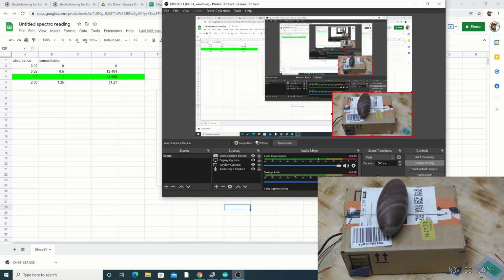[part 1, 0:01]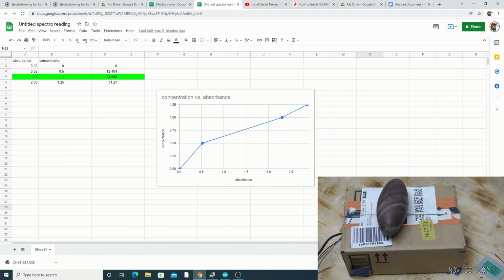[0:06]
All right, today we're going to be looking at a spectrometer. It's a very interesting device that I have put together and is going to help out many individuals that are suffering from not knowing what concentrations of copper sulfate they have in their bath.
So spectrometry is a way of being able to pass light through a known solution, and the known solution will give you a reading. The light goes in at 100% and then goes out the other side, and there is a photocell on the other side that measures the amount of light being absorbed. If the light is 100% going in, but not 100% going out, there is a difference between those two, and that's the absorption of light. The small particles of copper sulfate do that.
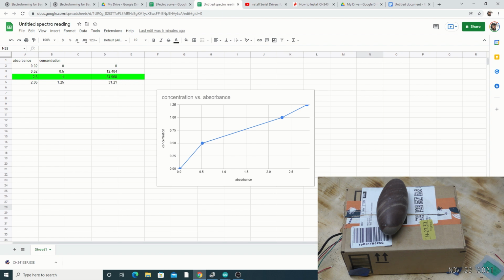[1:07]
It happens at a certain wavelength, however, so we're going to cover that in a video about what wavelength. And you're like, hey, this is just a box with a Shiva stone on top. What are you talking about? So in the box, there is a device that we're going to be building.
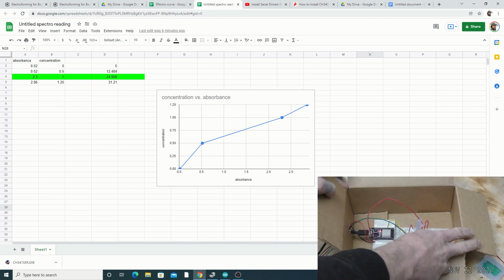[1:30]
Just like that. Now, I wanted to keep it as simple as possible. In other words, this enclosure certainly doesn't have to be a box from Amazon. I'm trying to keep it on the very inexpensive side, easy to build for people that have no understanding of electronics whatsoever. A true spectrometer is going to cost you a pretty penny, okay? There's no doubt about it.
But you can see there's a curve up here. And if you are into this type of science, the curve is amazing. When it came off of this, I was like, geez, that's pretty accurate. So I'm very, very pleased with the results of this very low technology being able to produce such good, accurate results. There's no doubt.
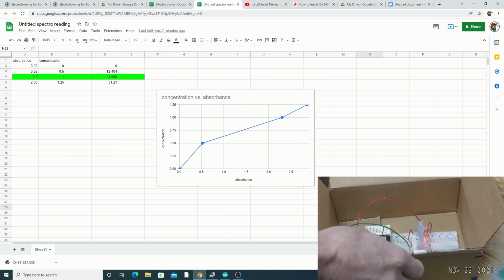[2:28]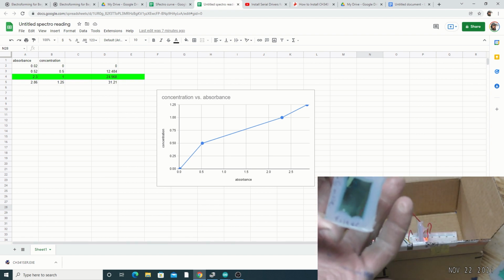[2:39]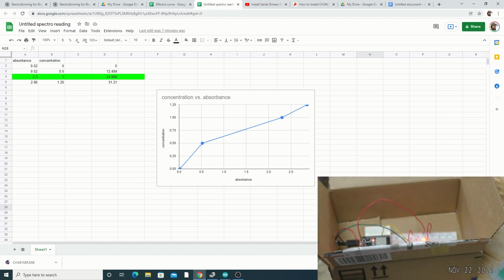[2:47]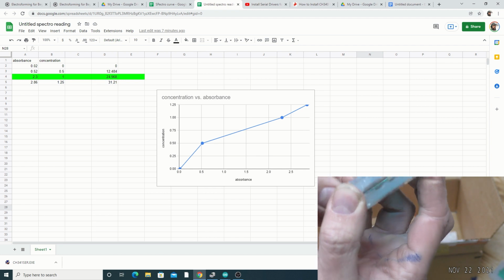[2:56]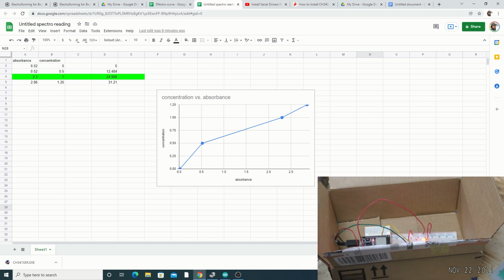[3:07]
Okay, so for example, I have a known solution, which we're going to be covering how to make, a known solution of copper sulfate. We're able to pass light through that and measure the amount of light. So we'll have different concentrations. This is a 1.25 molar. This is a 0.5 molar. See that one is darker than the other. And as they get darker, they have more copper sulfate in them. But you can see that there's not much of a difference between these two, so it's really hard to identify that with the human eye.
That's what this thing does. Later on in the video, you're going to be able to see that there was a box version and an unboxed version. There was very little difference between the box version and unboxed version. I'm going to help you shop for some of these devices too. They're not hard to find. They're in stock on Amazon, pretty cheap.
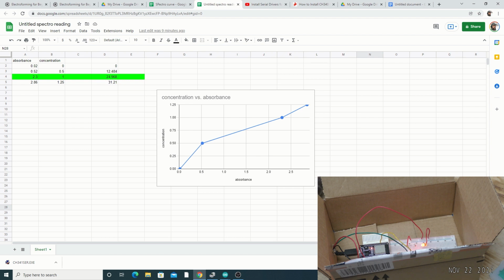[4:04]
This is a good gateway drug for those individuals who, you know, maybe are getting burned out on electroforming and want to experiment in other regions. The ESP32 module is a really cool hobby on the side, it's very well documented, and it leads to all kinds of crazy things. So this is a really nerdy level for the direction I wanted to take. I just want to give you something that I've been playing with for a while. I've been holding on to the results to make sure that I actually use it, I don't just build it and flex it to you.
I'll use it on several of my baths to see if I can make pretty significant changes, where I can go back to the shiny part of having just the right amount of copper sulfate in the bath. If it's oversaturated, I know what to do, and if it's undersaturated, I know what to do now, because I know how oversaturated or undersaturated it is. I can make changes because I can make samples and then measure those samples against this curve. Really cool stuff, right? It gets a little unconfusing as I go on.
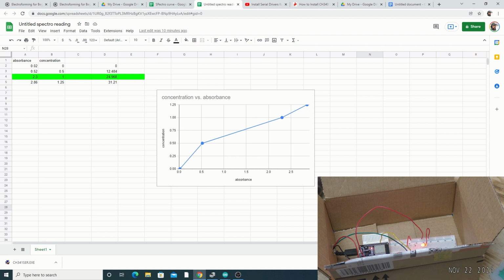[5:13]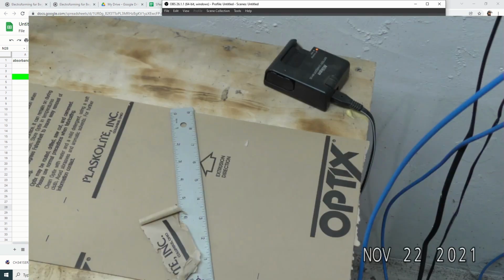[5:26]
So I'll leave you to the version one of a spectrometer using an ESP32, and we'll have fun building it. So hope you enjoy.
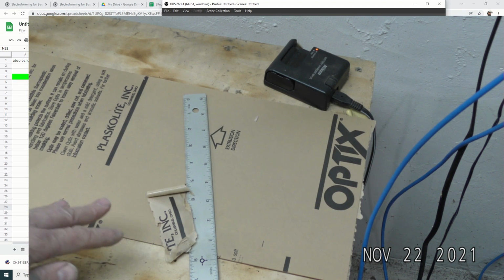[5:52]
All right, so I wanted to cover how to cut plexiglass in the next section. I went back and started editing the video and realized I didn't cover how to cut plexiglass. I just showed you these magical little things that were already cut. So here is plexiglass. It has a coating on it. You don't have to get the kind with the coating, and you don't have to get Optix brand. I would just go to Lowe's, Home Depot, wherever, and get a piece of plexiglass.
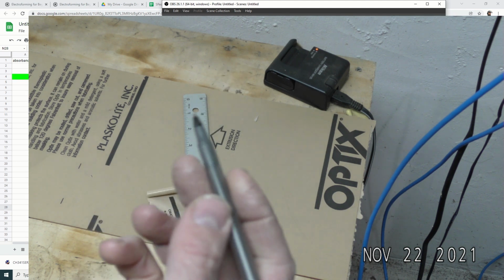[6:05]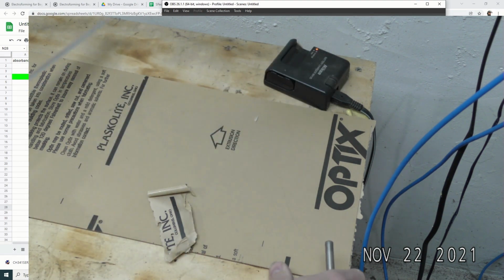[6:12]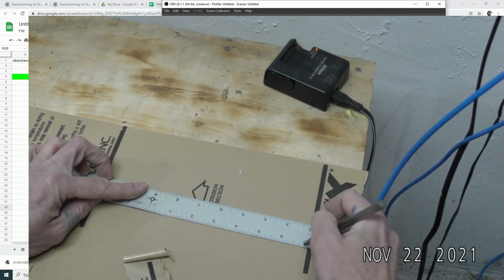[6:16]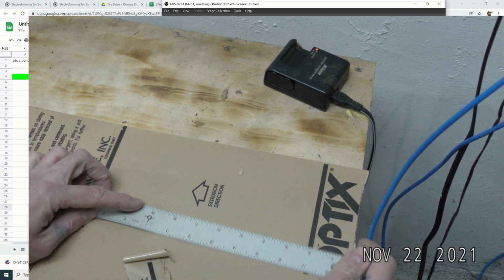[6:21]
If it doesn't have the coating, you'd have to use a Sharpie marker, but you need a metal ruler. And you just measure off, let's say, an inch and a half, which is what I used.
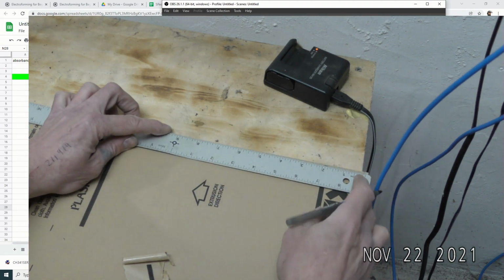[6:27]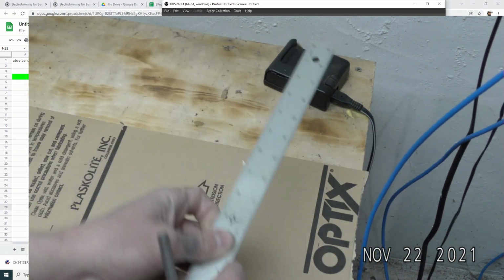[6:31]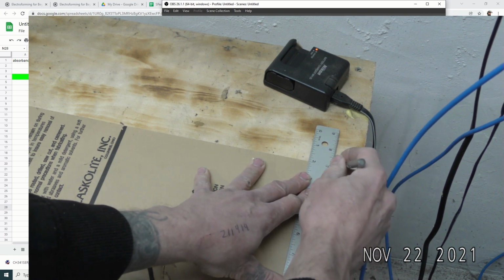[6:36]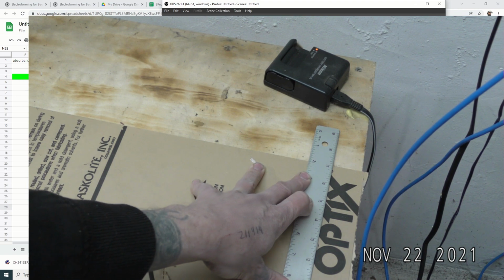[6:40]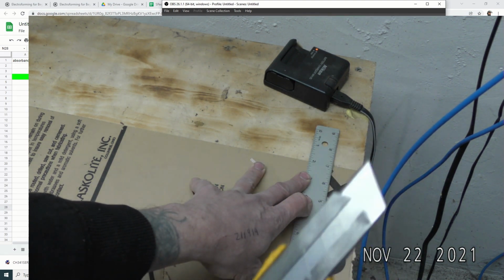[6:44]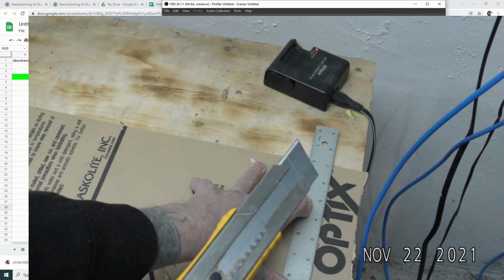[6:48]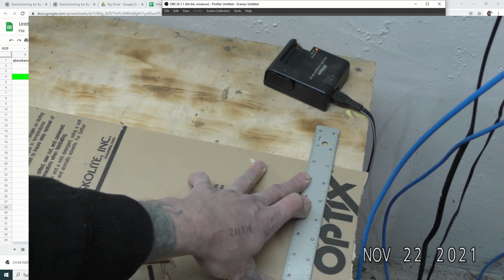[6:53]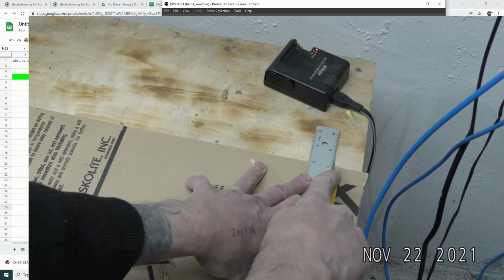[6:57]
Draw a line. You don't have to draw the line because you're going to be instantly cutting it. So you're going to use either an Olfa knife, I think they're called, or any knife. Doesn't have to be super sharp either, by the way. So you watch your fingers. Okay, keep your fingers back and just score a line.
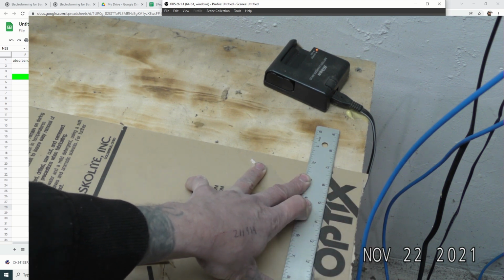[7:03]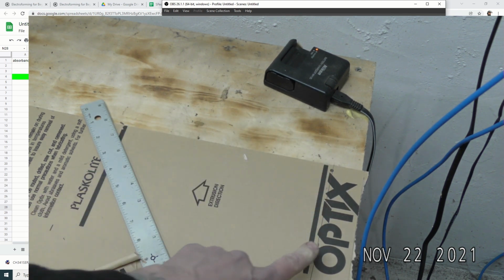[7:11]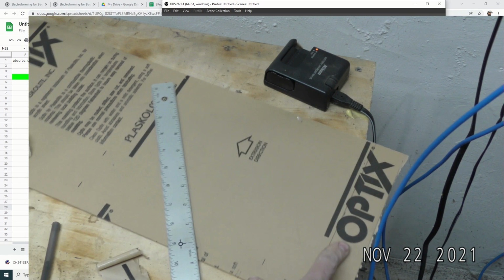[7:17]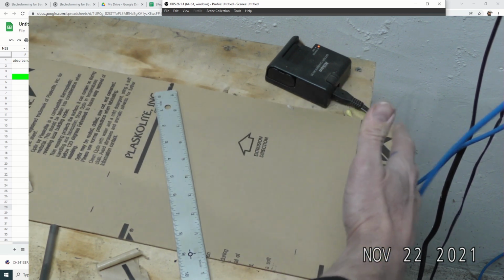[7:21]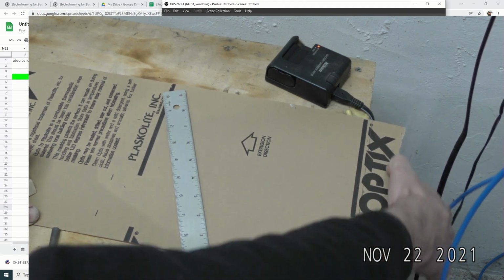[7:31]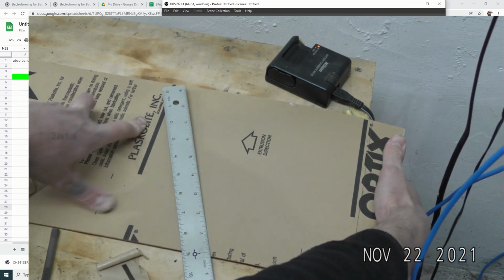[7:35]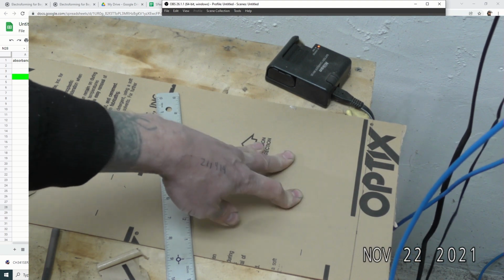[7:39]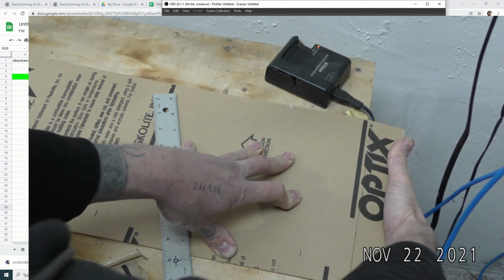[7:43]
I go about 2 to 3 times. Okay, nice scored line there. Then you put it on the edge of a table. I'm putting my hand here so that my thumb and my palm have equal play on it. So I'm trying to cover as much force distance right here. Then I'm going to hold down with my other arm right about here. And then I'm going to just simply go like that.
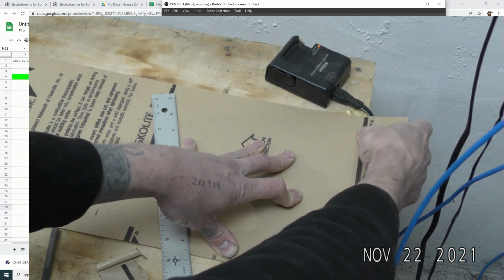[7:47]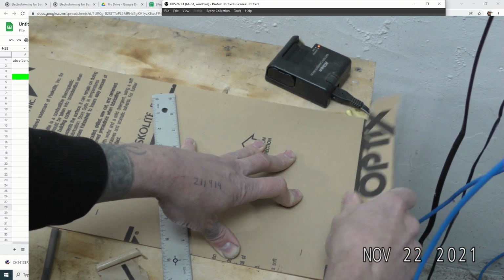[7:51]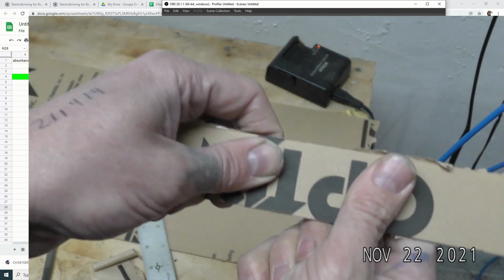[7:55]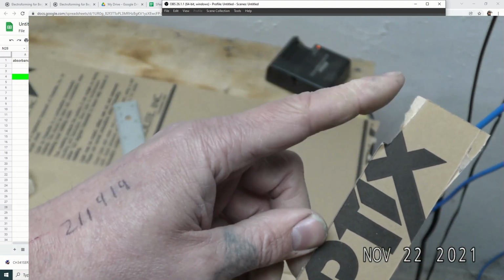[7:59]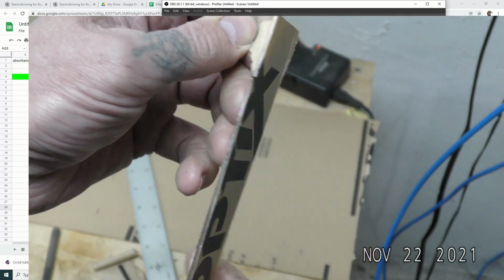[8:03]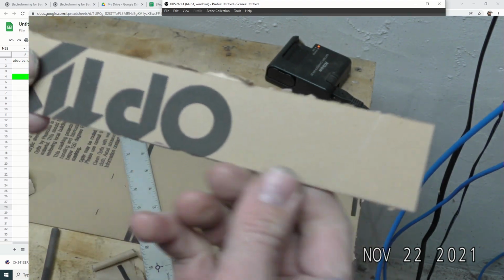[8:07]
Pretty cool stuff, right? And now, if you needed to cut the other way, you just measure it this way and snap, snap, snap. And you can snap as many. Sometimes you get bad results. But that's all in the fact that your score line needs to be cut, right?
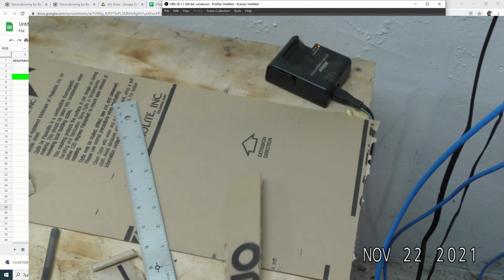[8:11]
I used a laser cutter to cut the samples that I have out, but you do not need a laser cutter. That's just a privileged nerd thing that I got. So don't think that you need one of those. That's how you cut plexiglass. So let's move on to the cuvette making. All right, we're going to make a cuvette.
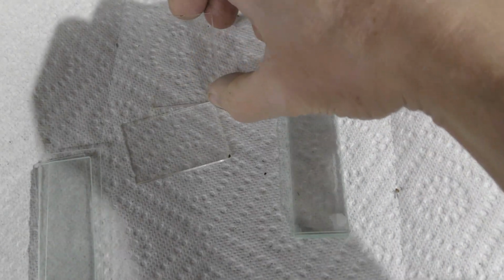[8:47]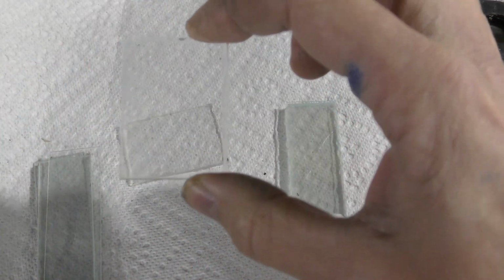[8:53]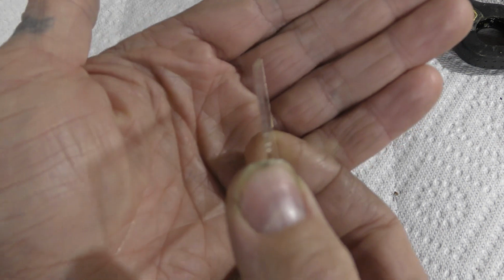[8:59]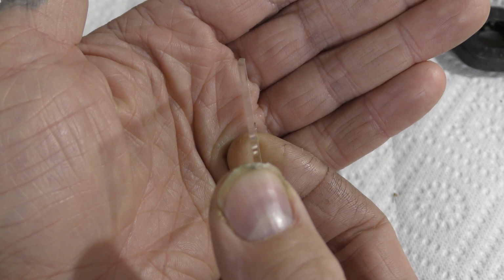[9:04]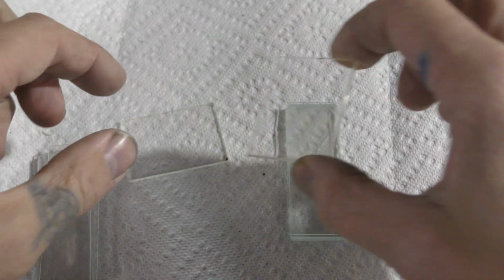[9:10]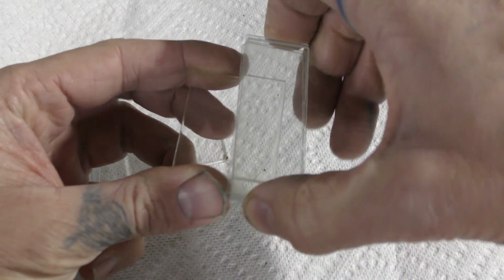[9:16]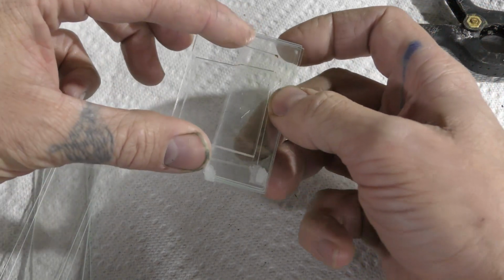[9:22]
This is an inexpensive cuvette in the fact that we have plexiglass that is non-UV protected, so you can pass UV light through it. Most plexiglass is that way. This is thin plexiglass, a 16th of an inch. Does not matter, however. If you have 1/8 inch plexiglass, if you just go to Home Depot, Lowe's, Menards, whatever it is, and you get yourself some plexiglass, it is fine.
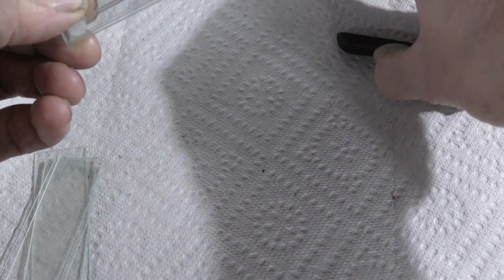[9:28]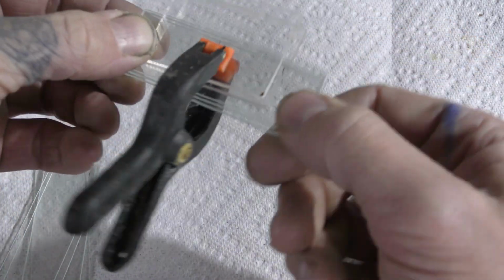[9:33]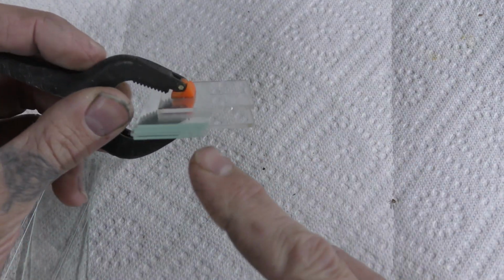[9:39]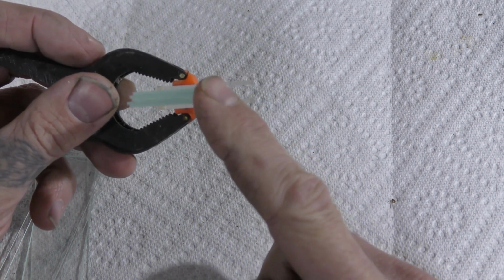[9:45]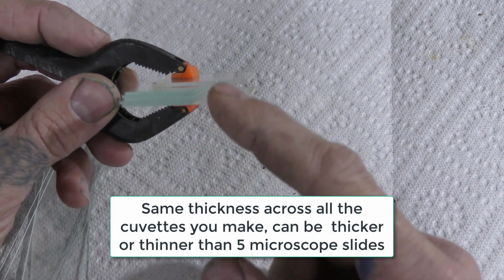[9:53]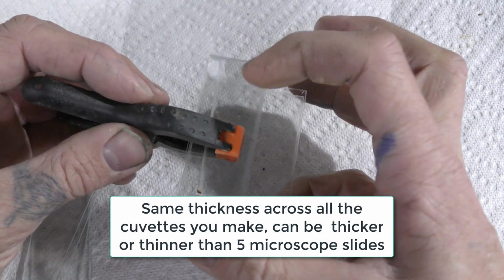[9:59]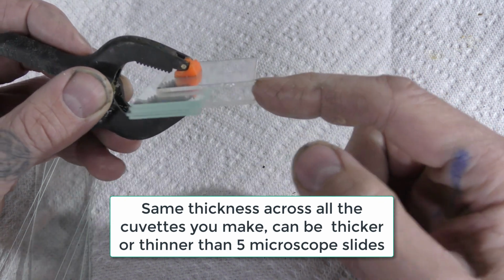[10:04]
This is kind of an inexpensive way to do this. For what we are doing, it doesn't have to be as accurate as you might imagine. So I trap it between a known layer of microscope slides. You can use anything for this. I just like the glass because it stays cold. It's at a very even level. So I have 5 microscope slides. Again, you can use anything you want for this, but it has to have the same thickness.
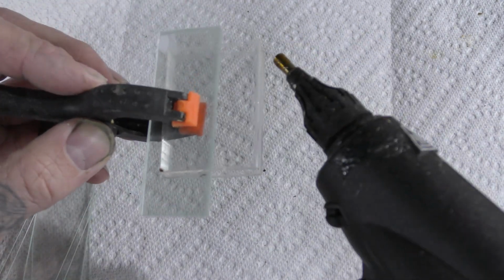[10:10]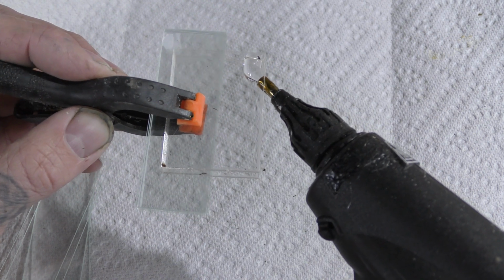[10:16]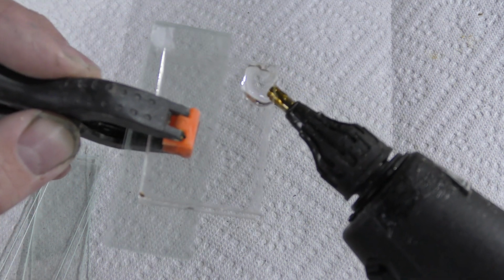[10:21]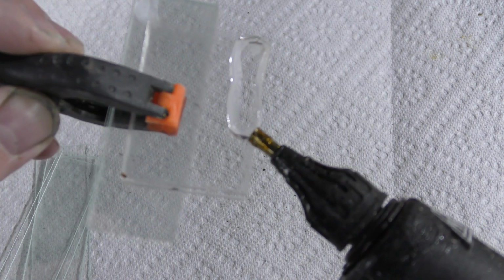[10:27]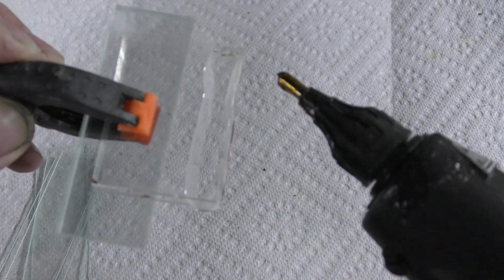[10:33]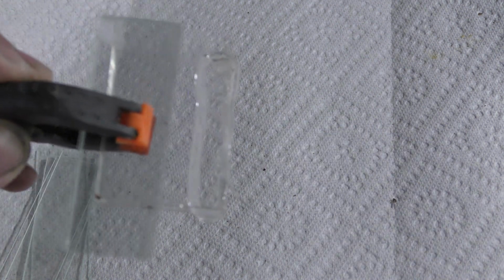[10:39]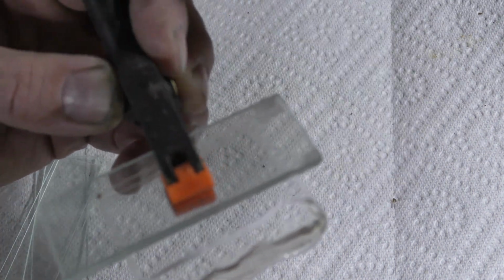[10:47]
Glue gun. Yay. All right, so what we do is start launching some glue in between these two panes on one side, and what we're going to do is seal off the one end. Doesn't matter how thick this is. And you know you have it because you can see straight through it. That's a good indication that you got a good seal. Then I'm just going to allow that to dry.
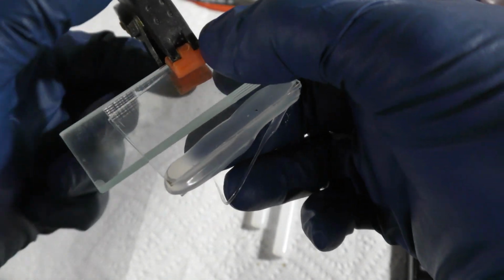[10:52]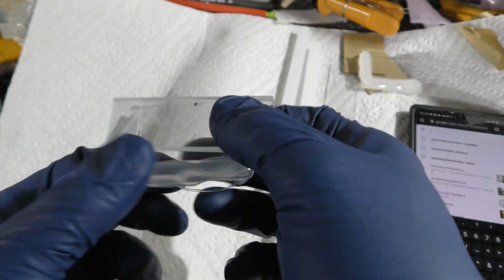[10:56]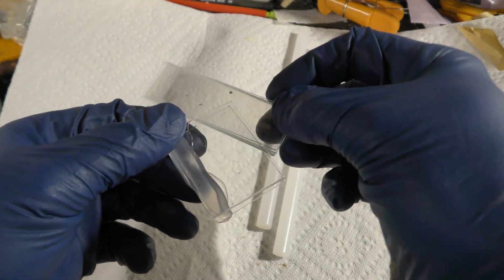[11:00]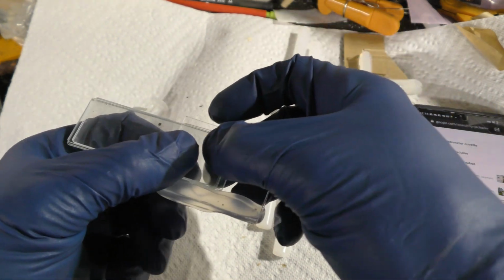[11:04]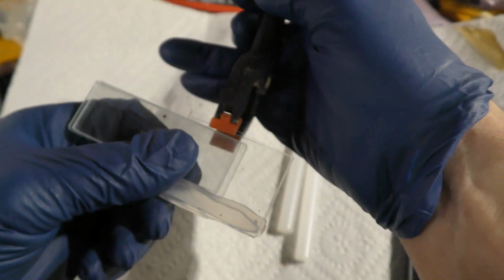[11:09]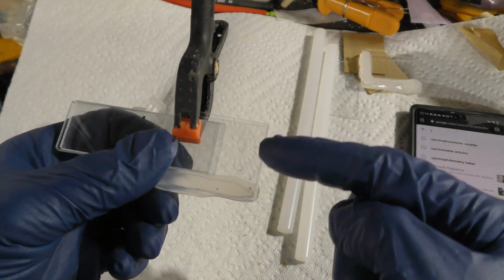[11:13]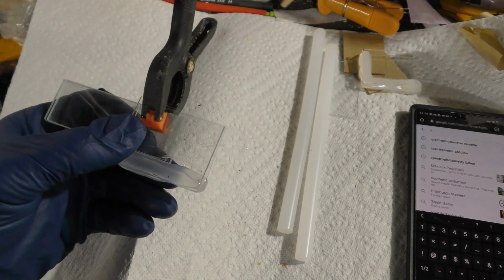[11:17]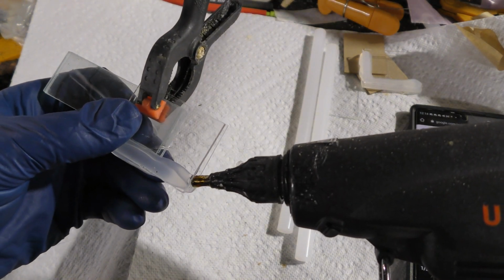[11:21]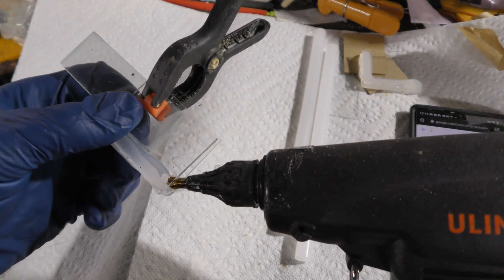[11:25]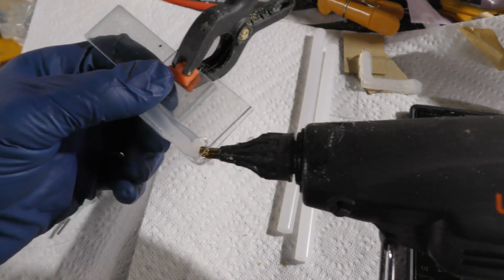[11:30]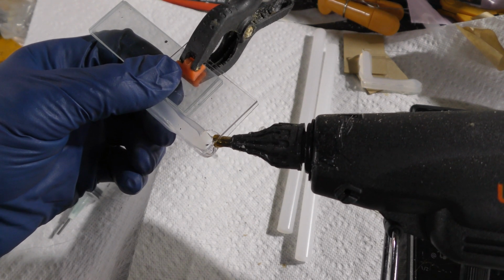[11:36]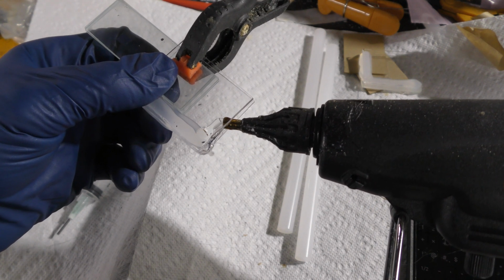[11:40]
All right, so the first one's dry. I'll just show you how to bridge two pieces together so that it's sealed correctly. So what we're going to do is I'm going to move the microscope slides over like that. Okay. I'll place the clip here. I'm going to heat this glue up using the tip. I haven't begun to inject anything into it yet, and now I'm just starting to. So you can see where it turned clear in that area. I'm still barely moving, and there we go, start going across.
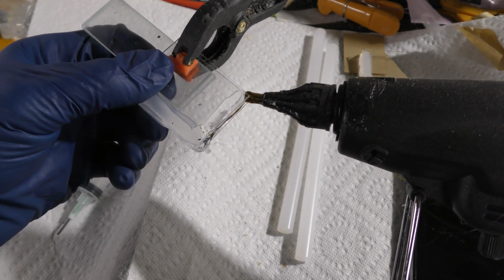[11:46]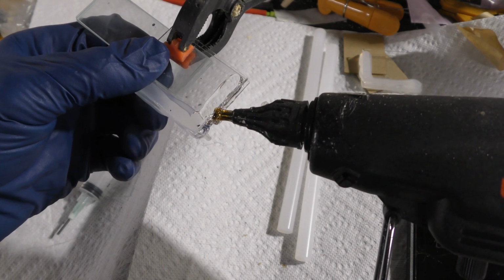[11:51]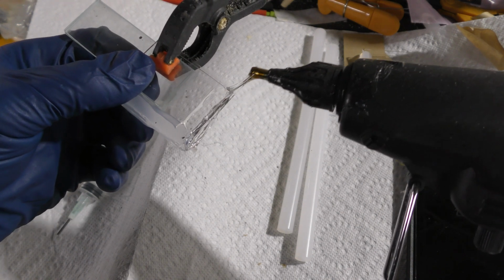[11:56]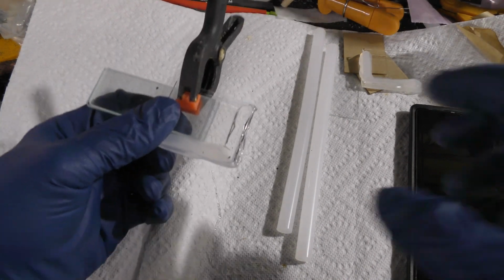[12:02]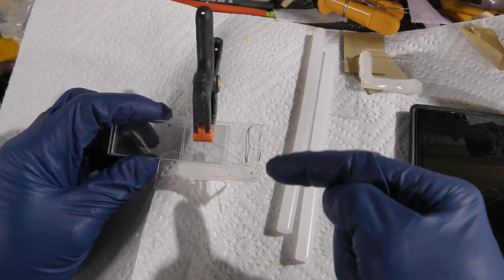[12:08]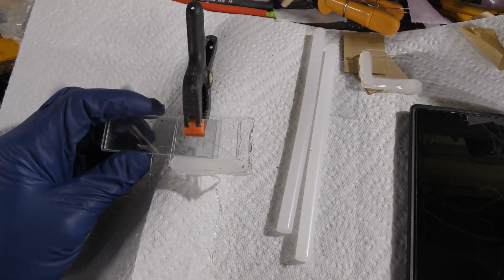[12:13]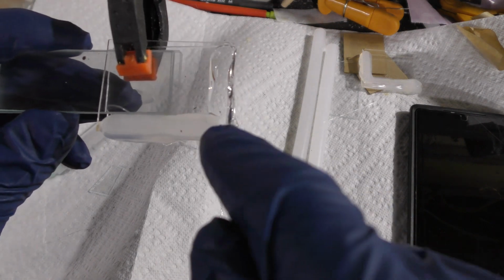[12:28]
These slides, I forgot to mention, are 2 inches by 1.5. Does that matter? Absolutely not. Only reason they're that big is because I figure by the time I get that much glue in there, I have a nice little window of the solution. If you are not really crafty, cut your pieces maybe 2x2. It's a little bit safer. So there we go. It should be clear right there, and it's starting to harden.
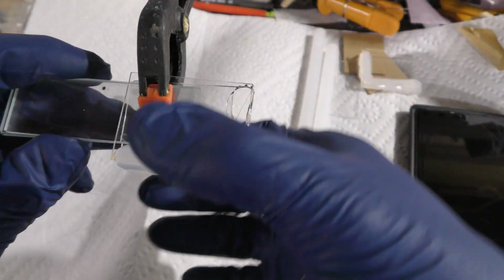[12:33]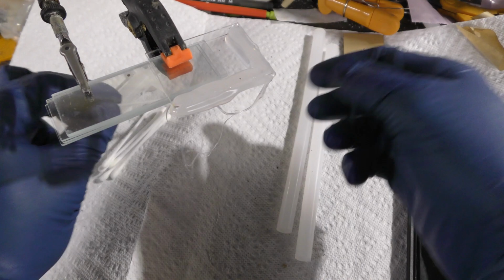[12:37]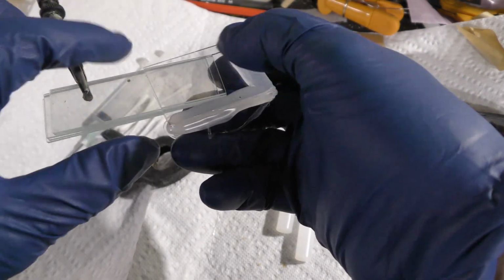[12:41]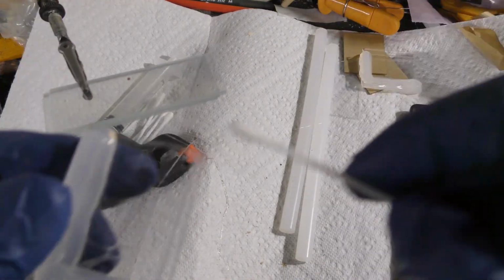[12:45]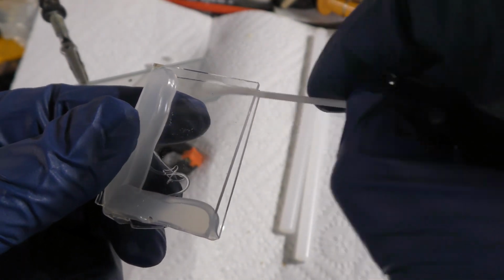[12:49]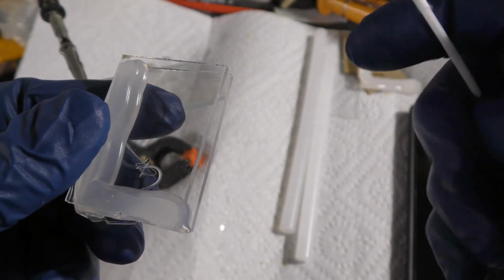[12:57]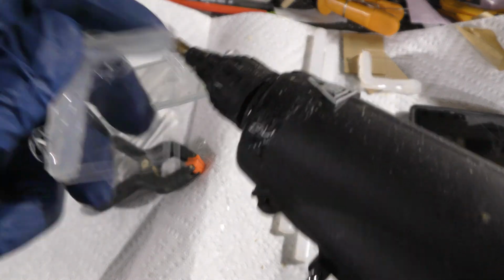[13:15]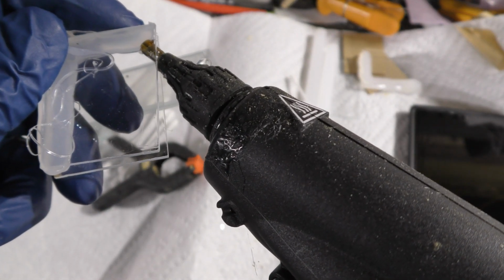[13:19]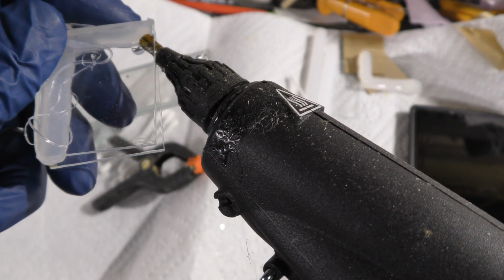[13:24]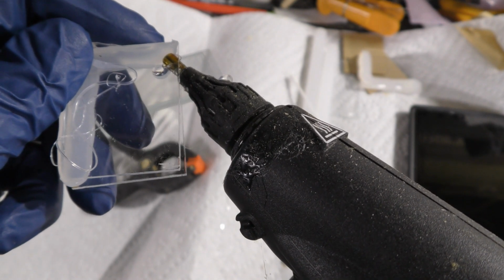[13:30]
Now, if you have gotten anything on the inside of one of these, just by accident, I would suggest before you make another bead to just give it a once over with a dry Q-tip. It's a much easier clean if it has that big opening. All right, sweet. The outside doesn't really matter because we can clean it after the fact. All right, just like before, we heat this up. Start ejecting slowly. Move that tip right into that.
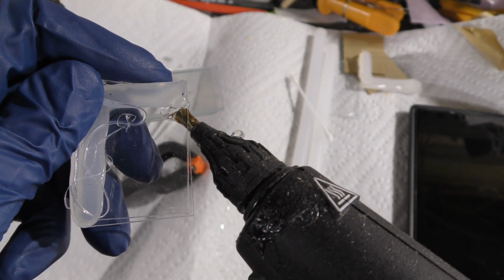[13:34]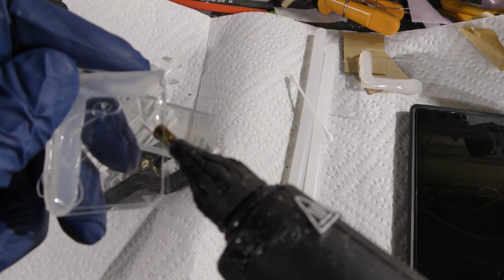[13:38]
Slowly eject. Once in a while, I'll just push back, just like a kind of weld. Boom, boom.
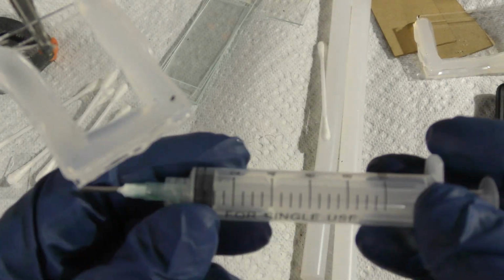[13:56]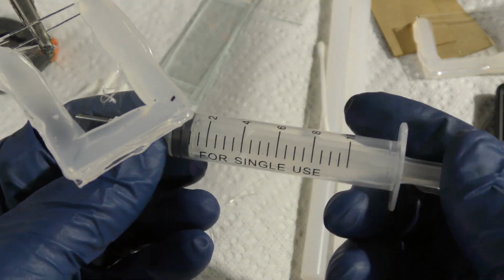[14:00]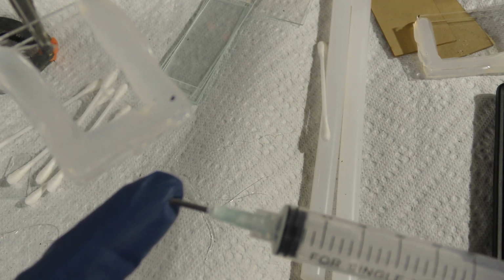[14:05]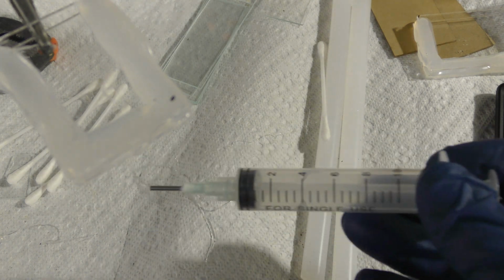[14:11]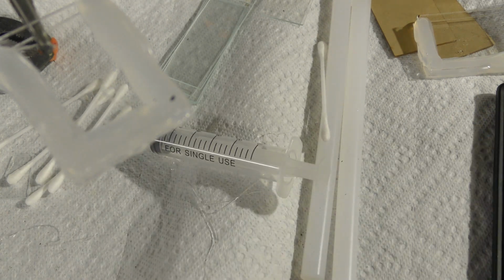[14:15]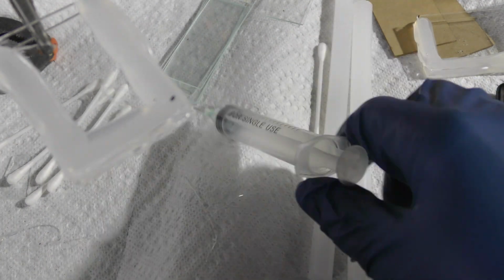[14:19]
All right, so for this first one that we're going to inject with water, you can use a syringe with the metal tip, or you can use a dropper. Doesn't really matter what you use. I just had a bunch of syringes. We don't want to use the metal tip when it comes down to the copper sulfate versions because it could interact and get stuck, especially if they're cheap and they're not pure stainless.
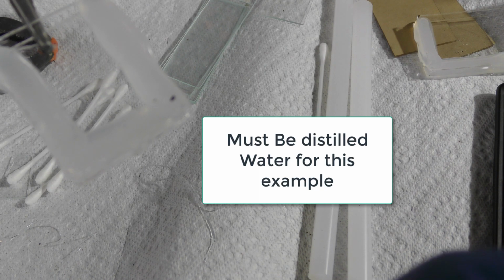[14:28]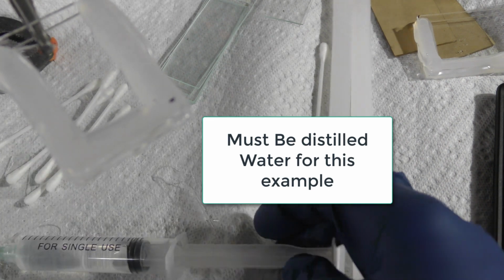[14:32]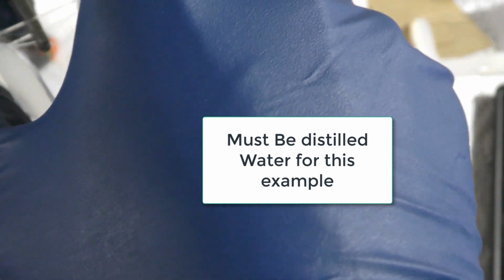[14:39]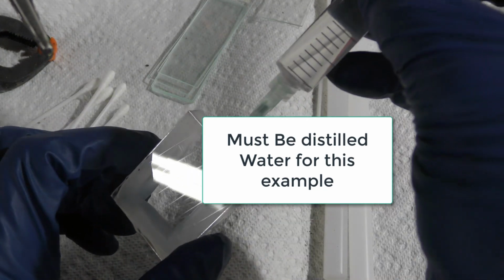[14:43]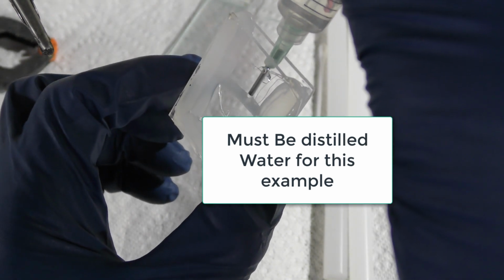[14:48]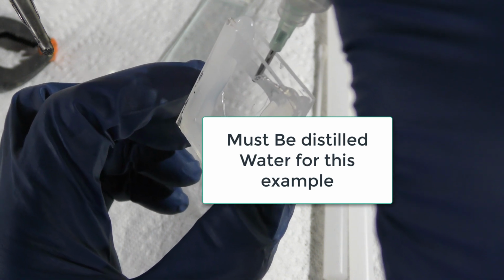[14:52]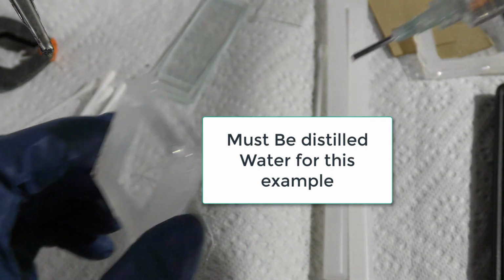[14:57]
So I'm just taking some water into my syringe. Then I'm just going to eject some water. It's nice to have this one to zero out the device I'm going to show you how to build. Okay. I'm going to leave a little space at the top.
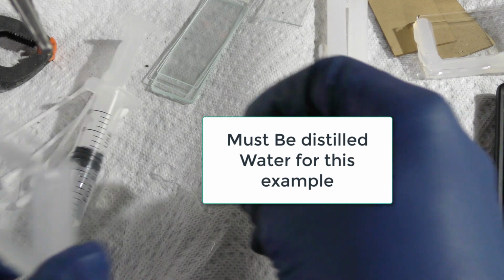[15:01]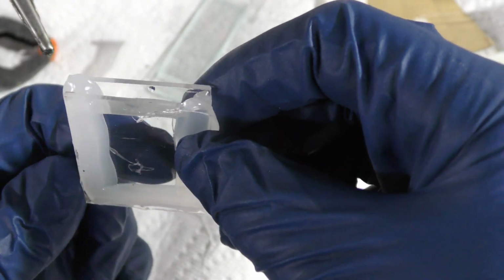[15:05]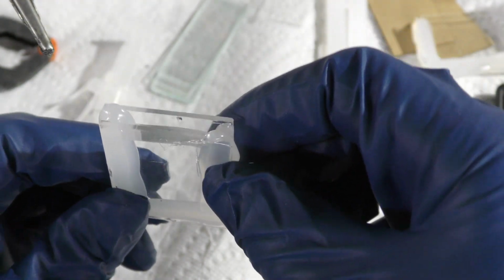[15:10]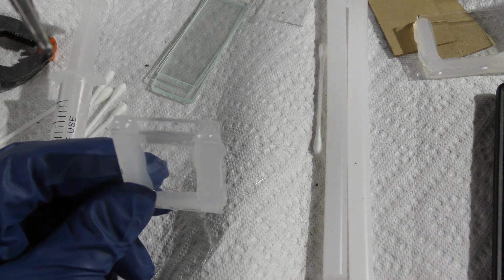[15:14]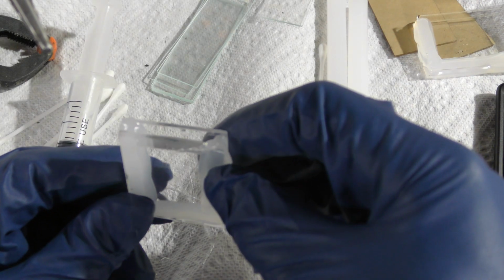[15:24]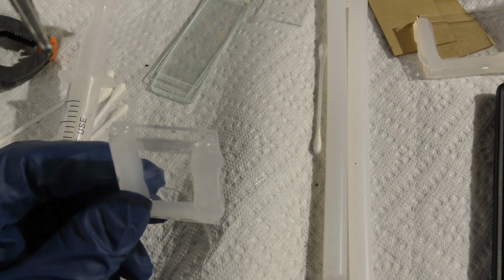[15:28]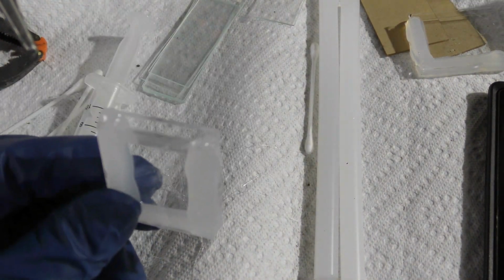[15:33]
Now certainly you can use this same cuvette if you wanted to over and over again. Again, it's really cool to have these already pre-made, to have on hand so that you don't think that you're going insane with settings and everything else. So once you make one of these, it's sealed. You can set it off to the side. It'll last God only knows how long, to be honest with you, because they're sealed with air and everything.
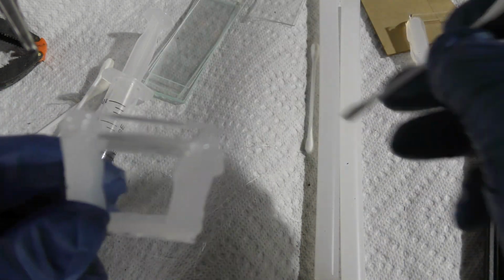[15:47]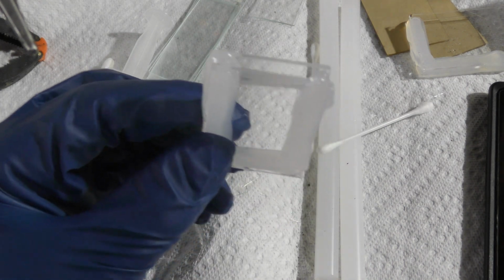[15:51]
So one of the things I would highly suggest is taking a Q-tip and just making sure there's no moisture at the very top. Just a little cotton swab. Okay, and then hopefully I can get this caught on film. It's at a weird angle.
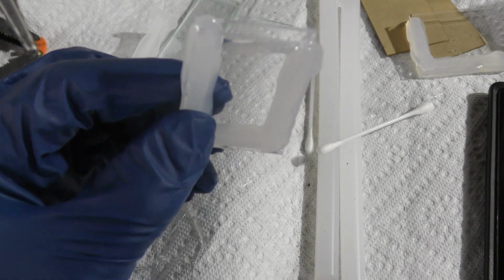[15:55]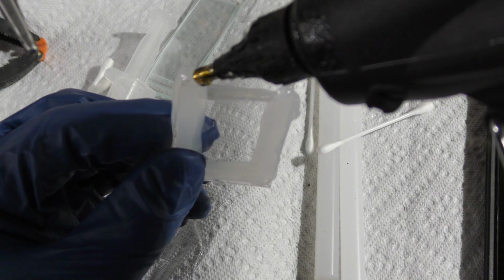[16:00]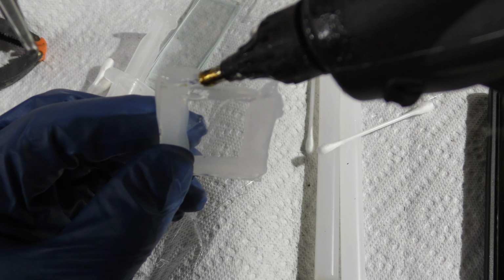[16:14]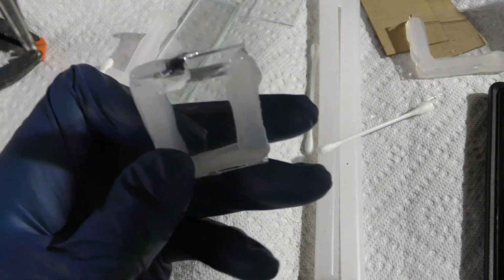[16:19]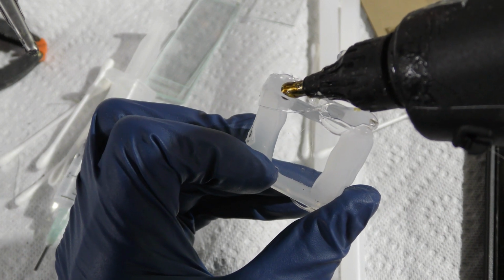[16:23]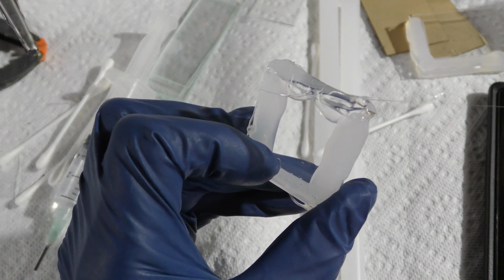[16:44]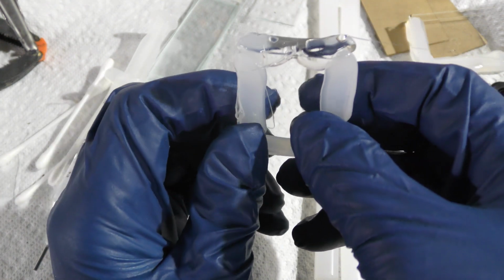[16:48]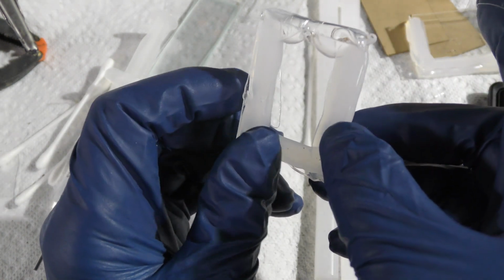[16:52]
Okay, so all I'm doing is heating one side, just like I showed you before. And then slowly just pumping this in. Okay, then once I get halfway, I'm going to stop, turn the bus around, heat the other side. And then start going like this. And then overlap the two. Just like that. It will be messy.
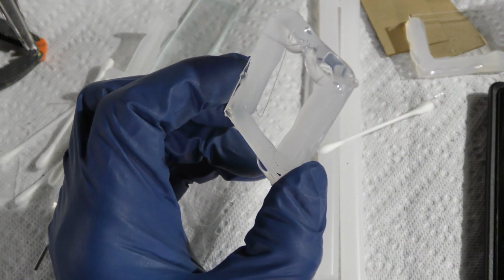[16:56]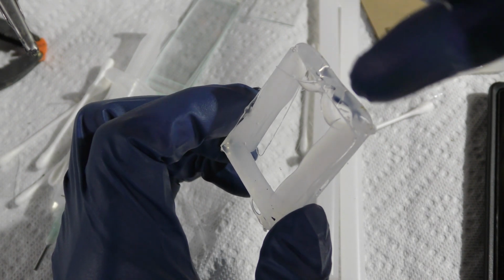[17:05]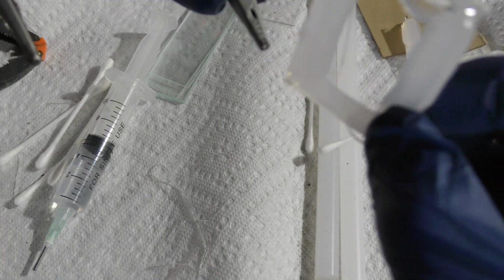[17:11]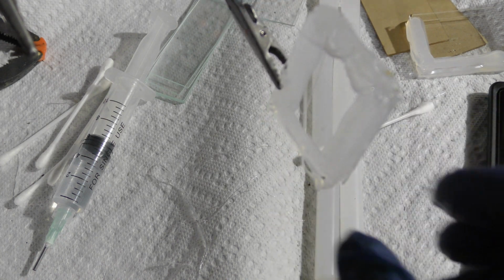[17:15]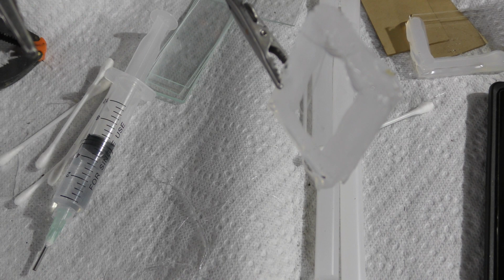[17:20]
On the top part, I'll let it dry and then add just a little bit more on the top. Okay, put that in the helper hands, let it dry. And now we have our nice, clean, crisp, distilled water test subject.
And the reason we have to make that one is because we have to take into effect the glass. We have to take into effect the water. Even if it's water, it still has a property to it. And so does the plexiglass. So your plexiglass could be thicker, you know, than mine. But we have to have a distilled water version to rule that out in the test.
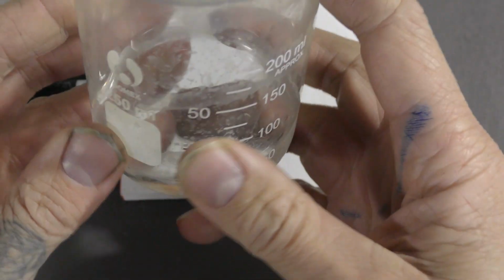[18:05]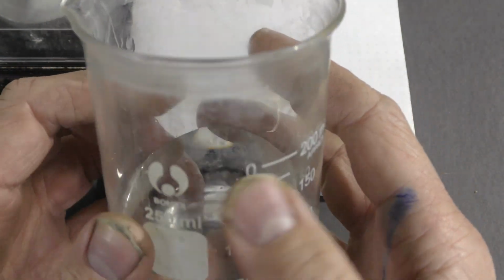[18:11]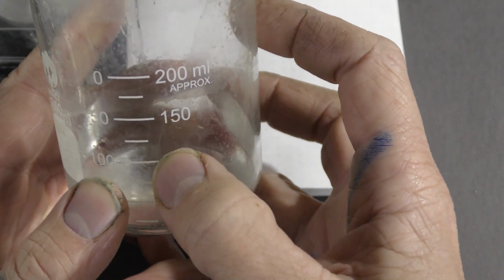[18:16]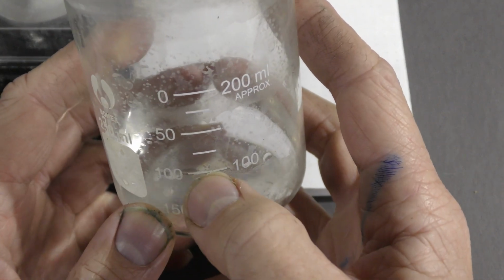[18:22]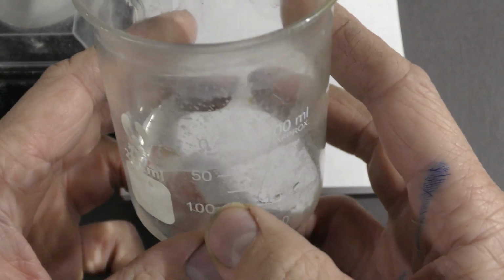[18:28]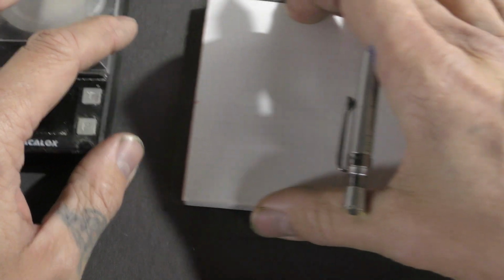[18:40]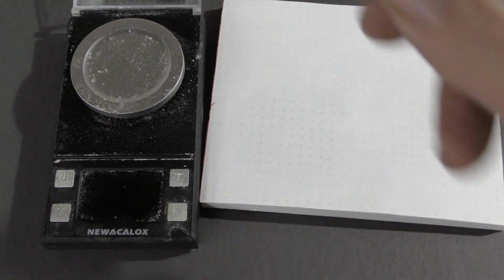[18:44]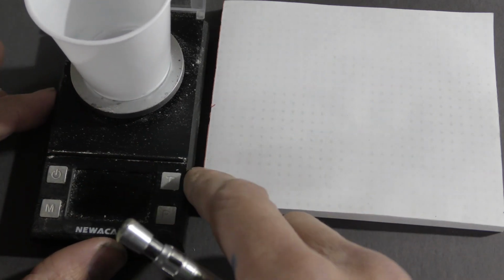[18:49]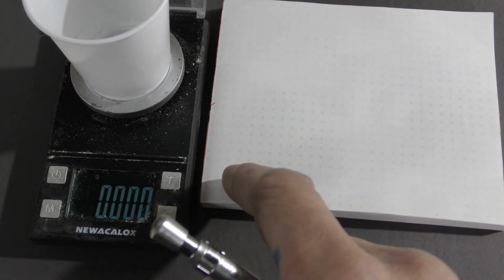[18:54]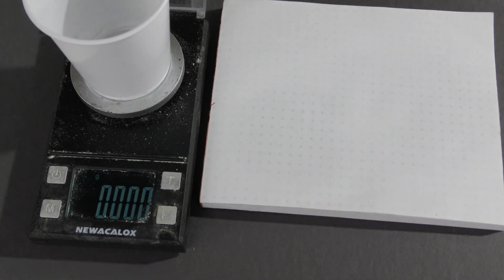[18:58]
You also have a weight. Okay, so I could put a cup on here. This is a very small scale. I could turn it on. I can make sure it's tared out, which is zero. And I could put copper sulfate in this cup and measure out grams. Okay? So now we have those two visual aids in our head. We can get started.
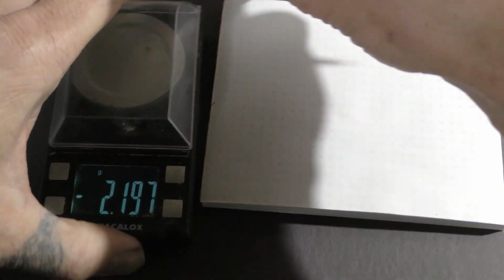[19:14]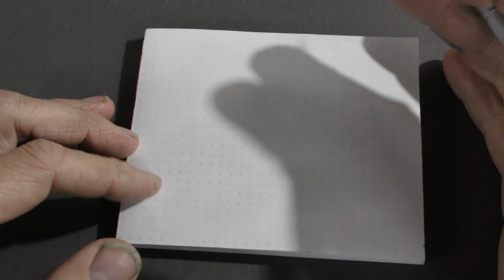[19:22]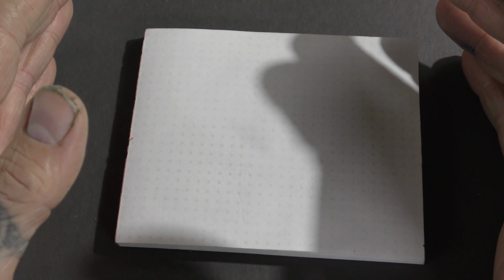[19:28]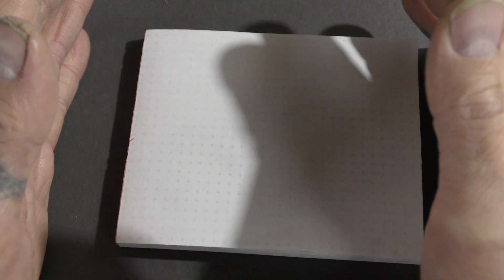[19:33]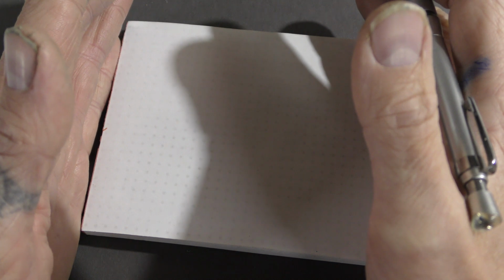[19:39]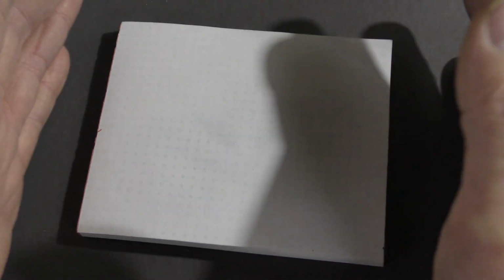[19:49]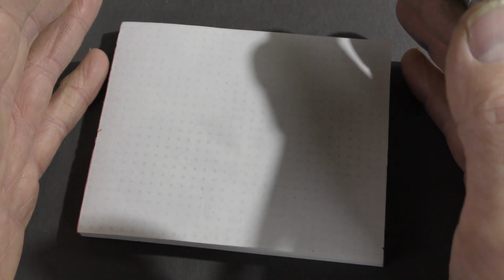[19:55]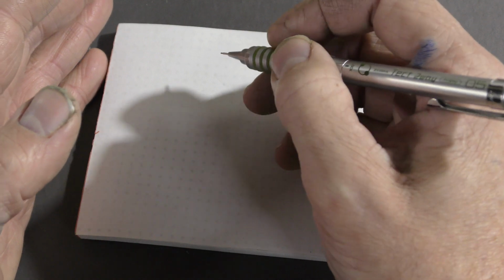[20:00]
All right, so to make a known solution, we just have to have the ability to know how much copper sulfate pentahydrate, which is also called copper sulfate 2, is in the liquid. So there's copper sulfate and there's copper sulfate 2, which is the pentahydrate version, which already has a volume of liquid or H2O in it. So just know that there's already liquid in the crystal, and that's why it's all fluffy like that. So we're definitely using copper sulfate pentahydrate.
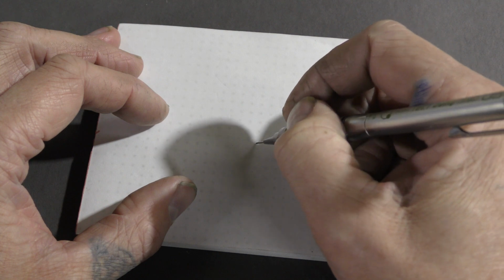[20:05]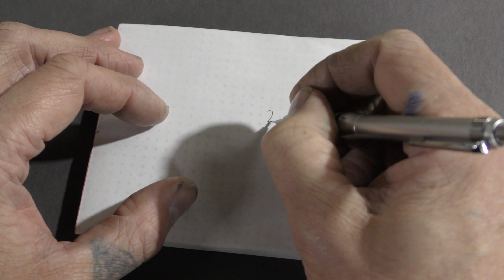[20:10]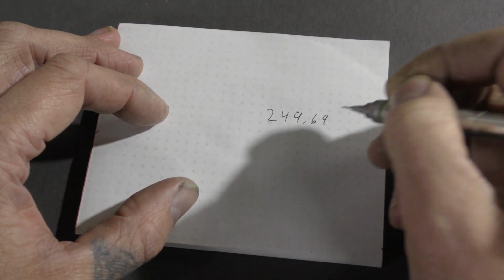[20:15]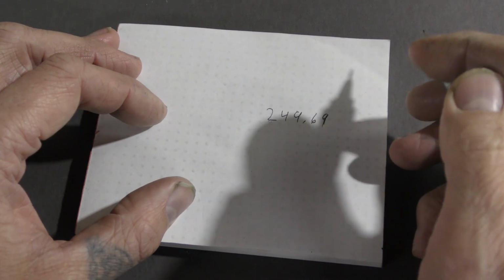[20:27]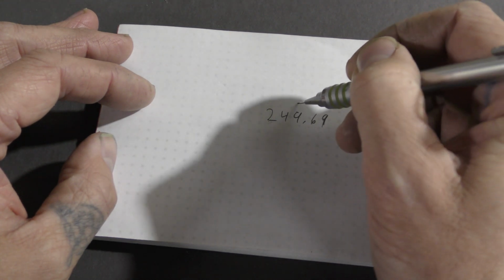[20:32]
So the molecular weight of copper sulfate pentahydrate is roughly 249.69. So at this point, you're not really worried too much about it. 249.69 is the molecular weight of copper sulfate pentahydrate. Sweet. Okay, that's a known value. You could look that up anywhere you want. All right, so we got a known value.
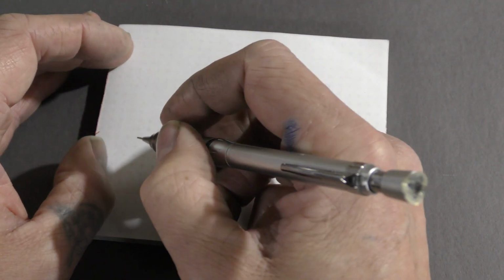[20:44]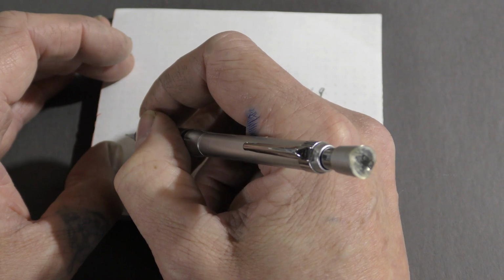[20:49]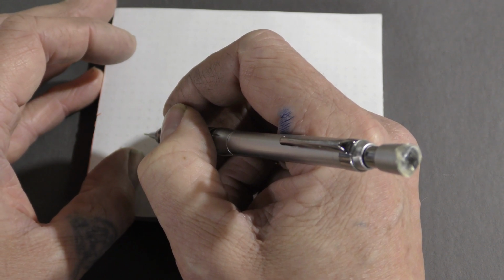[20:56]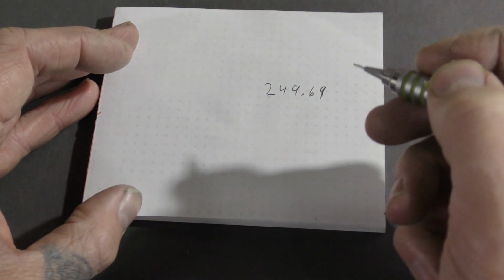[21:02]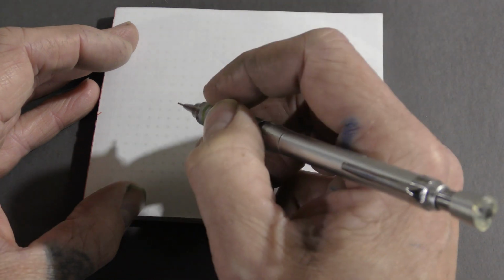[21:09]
Now what's going to change is we're going to have to make about four known solutions. I would say if you really want accuracy though, you can go 5, 6, 10 solutions, but in copper sulfate pentahydrate, you don't really need that much. I'm going to do 3 just as an example, and I would suggest at least 5 to 6. Okay? So we'll start out with one that's pretty simple.
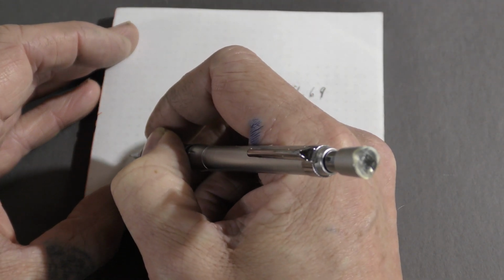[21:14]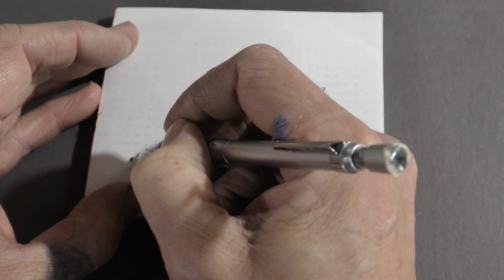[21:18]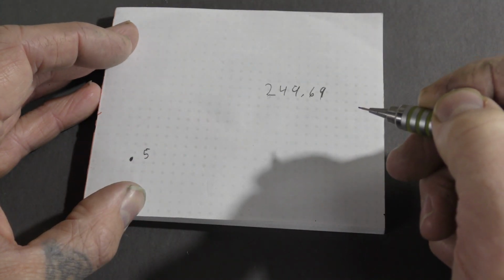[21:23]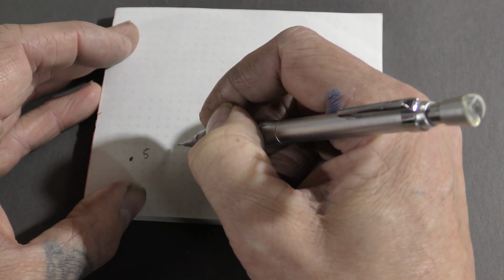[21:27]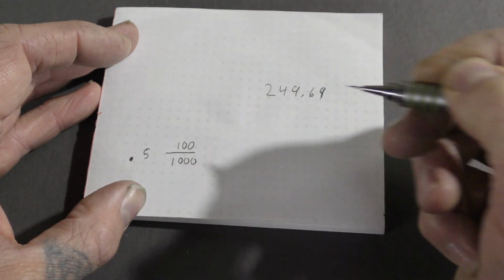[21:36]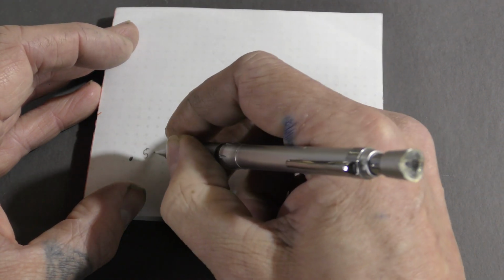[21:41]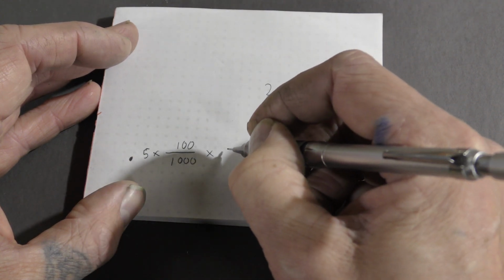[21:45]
So we're going to go half a mole. So we're going to put 0.5. Okay? We have a known amount of solution. We're going to say 100 milliliters. Okay, we're going to put that over 1,000. Okay. Now we're going to times those two numbers together, and we're going to times it by the molecular weight.
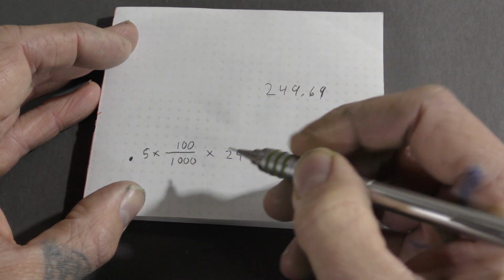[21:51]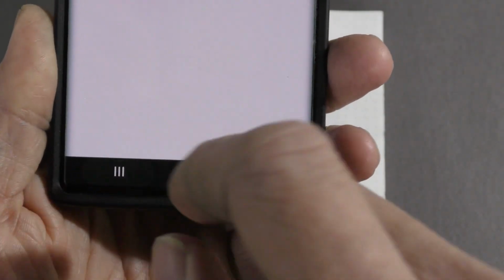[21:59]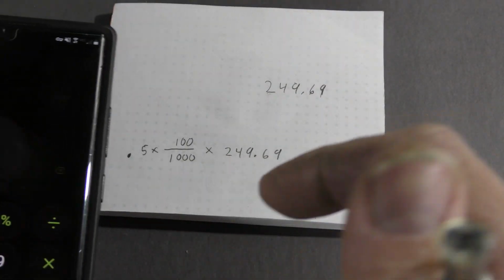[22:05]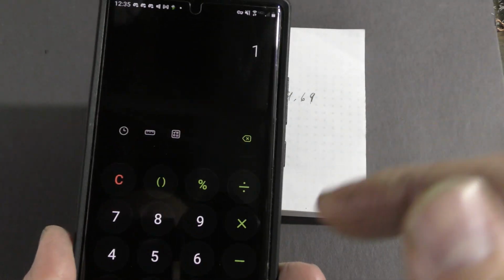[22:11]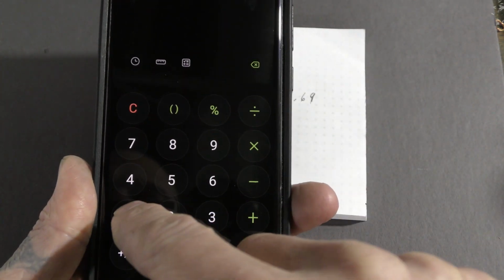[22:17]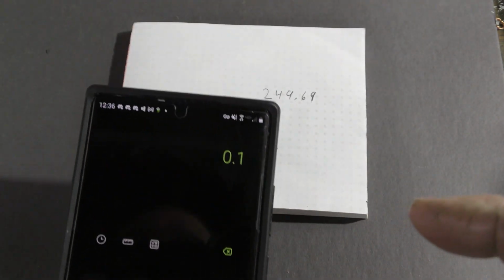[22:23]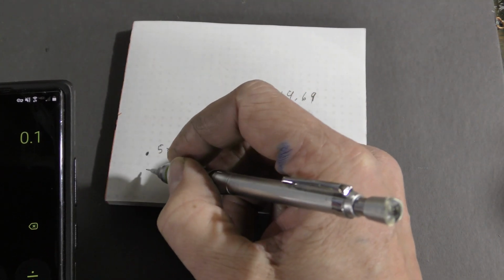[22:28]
You're like, oh crap, there's a fraction. They showed me this in school. I hated math. It's not hard. To get rid of that fraction, we just do 100 divided by 1,000. And it's just going to give me 0.1. So you don't even have to know this as long as you're using the same amount of liquid, but it's really nice to know the math.
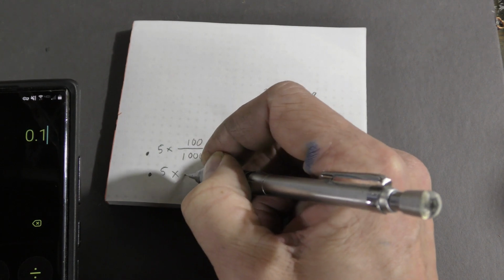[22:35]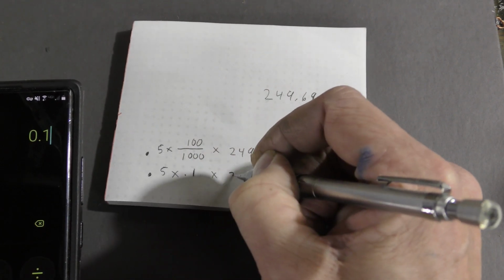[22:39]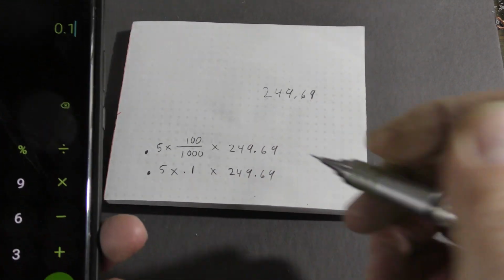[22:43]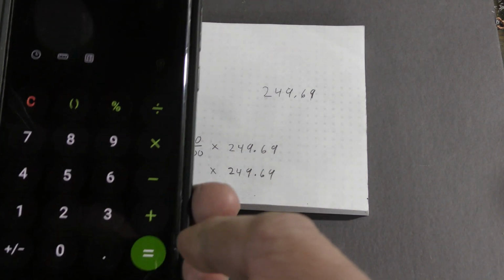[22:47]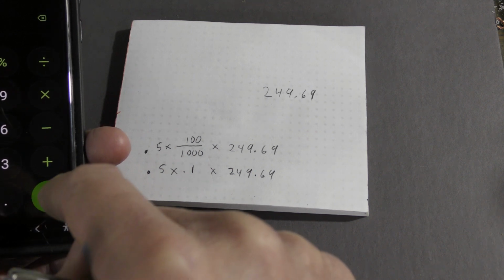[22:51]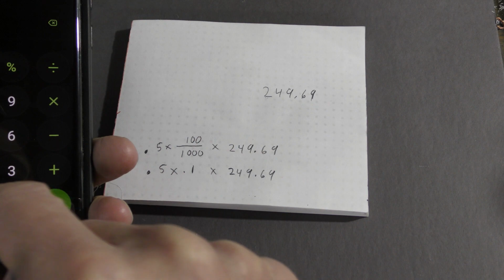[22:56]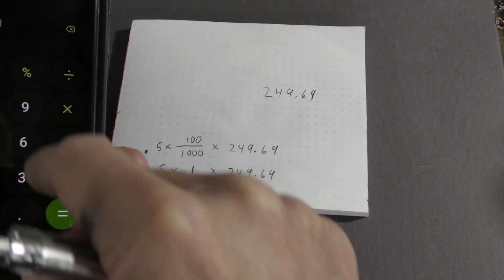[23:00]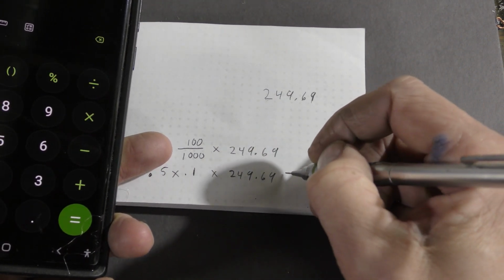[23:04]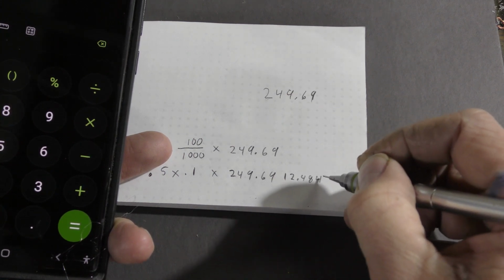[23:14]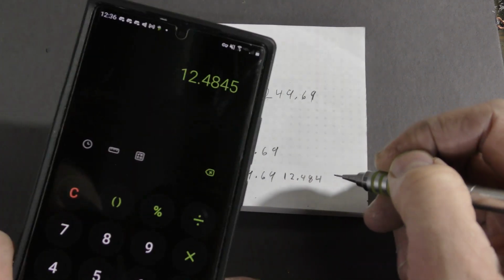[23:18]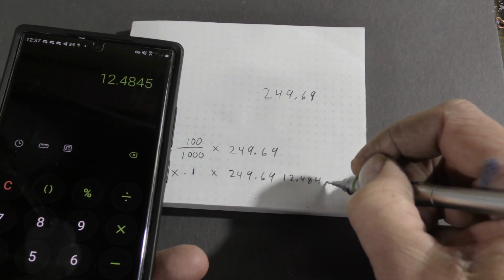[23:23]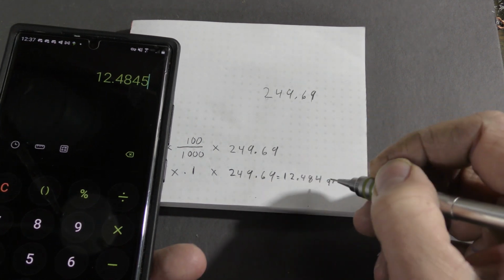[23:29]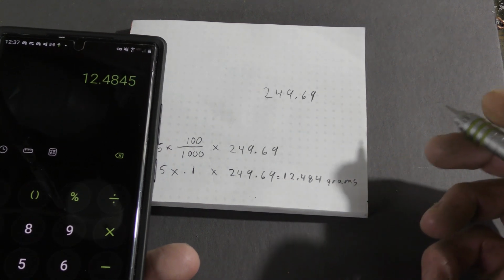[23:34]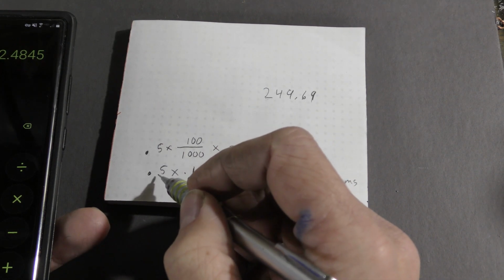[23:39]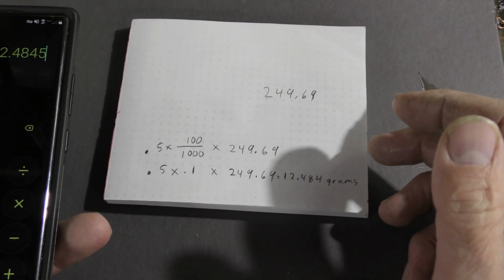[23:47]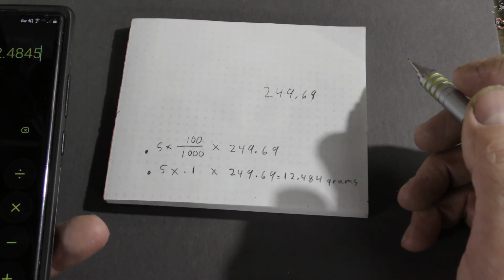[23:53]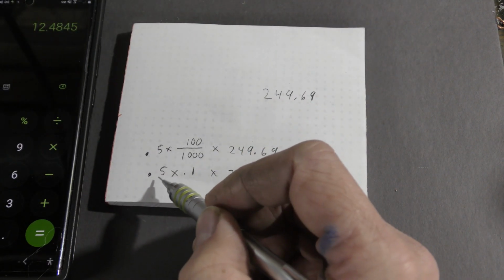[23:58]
12.48. Okay. And this is going to be the grams that we're going to need to mix of copper sulfate to distilled water. So you're just going to measure out 12.48 grams of copper sulfate and mix it with 100 milliliters of distilled water. And you'll have a 0.5 molar solution. And then you're going to trap that between two panes of plexiglass, just like I showed you how to trap distilled water between two.
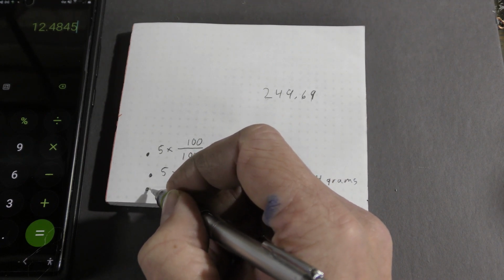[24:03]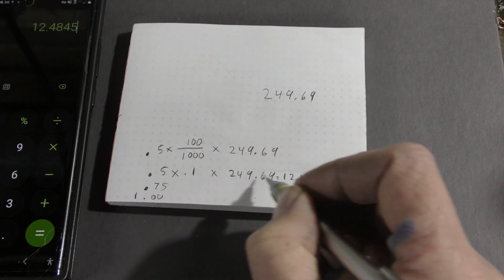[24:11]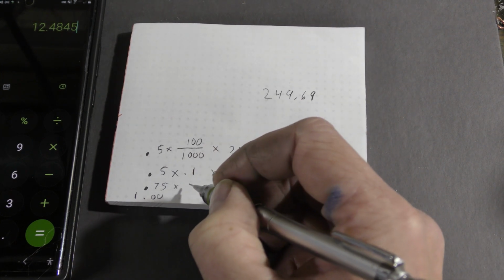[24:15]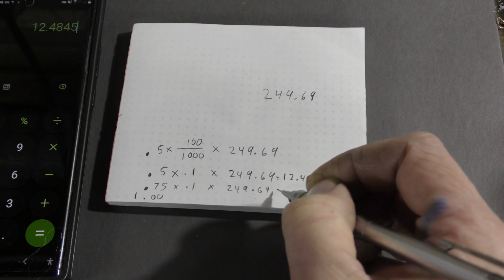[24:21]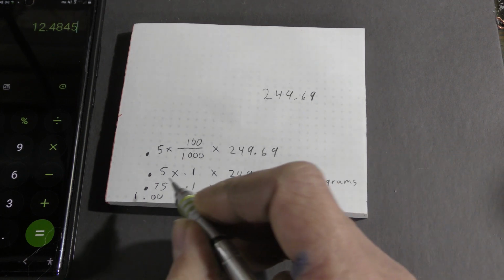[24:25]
And now we make increments of this. Okay, well, we could go 0.75. We could go 1. And continue with this out. The same thing. 0.75 times 0.1 times 249.69 equals, and you've got to just do the math on this one. We change this number and we keep changing it.
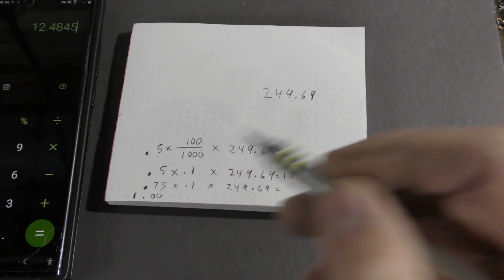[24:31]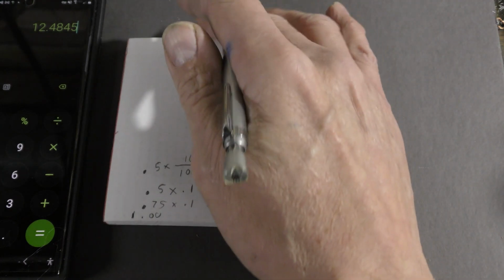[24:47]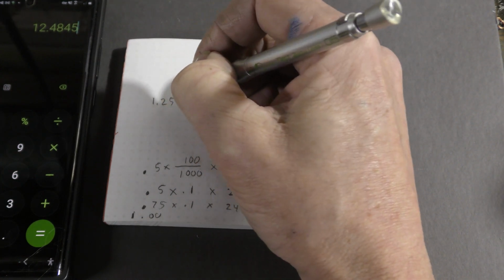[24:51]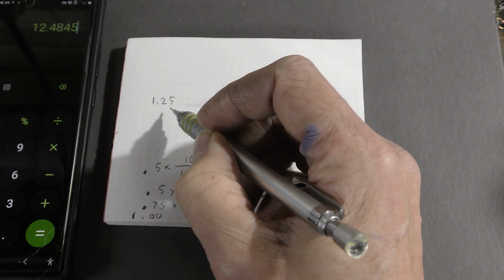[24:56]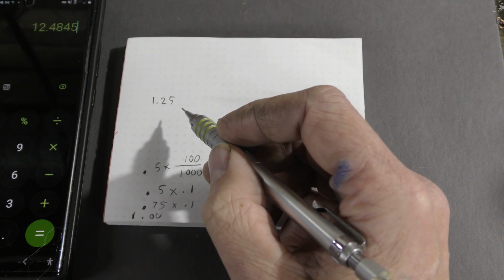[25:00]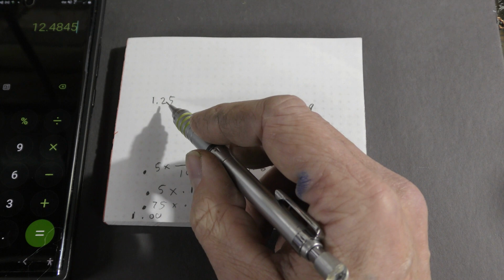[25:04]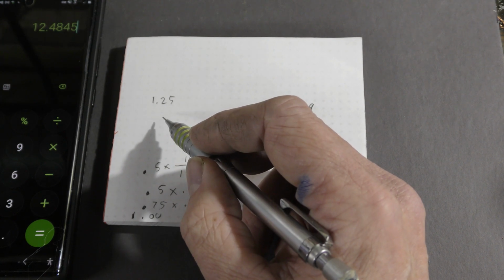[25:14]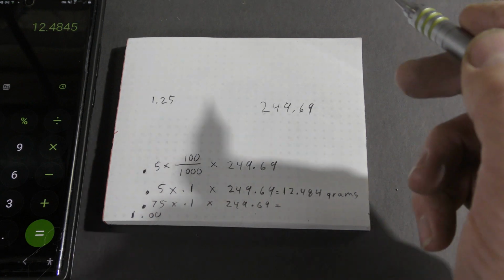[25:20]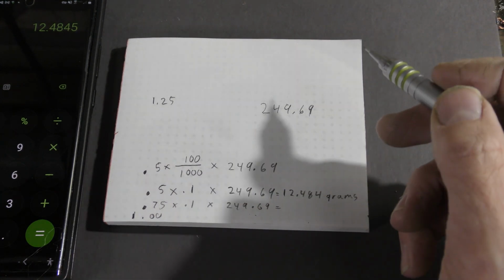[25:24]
You're going to hit a wall though. And the wall, it's not really a wall, it's just the amount of copper sulfate pentahydrate that actually dissolves in water easily enough. So I would say you would cap yourself off at 1.25, okay? At 1.25, about 1.3, it gets a little bit harder to get it to saturate into the water because you need a lot of heat. So 1.25 will allow you to just have hot water, but at 1.3 or 1.35, you have to have absolutely 200 degree water, and to trap that between two panes of glass held together with hot melt glue, probably not a good idea. Fun stuff.
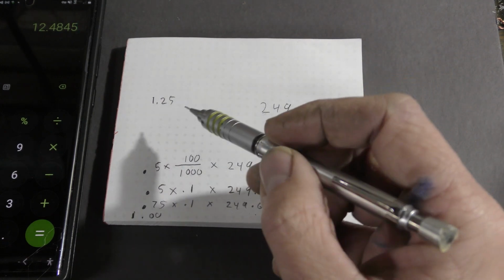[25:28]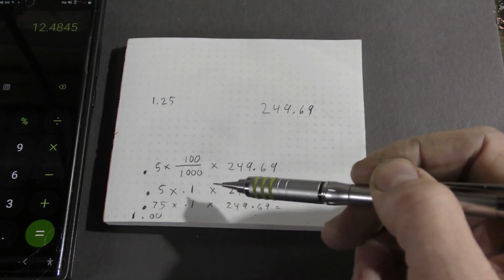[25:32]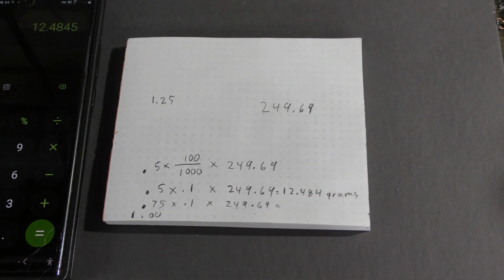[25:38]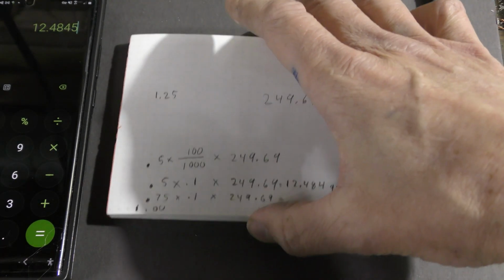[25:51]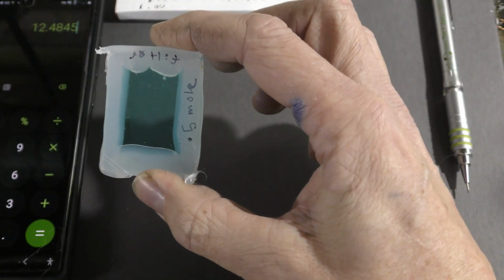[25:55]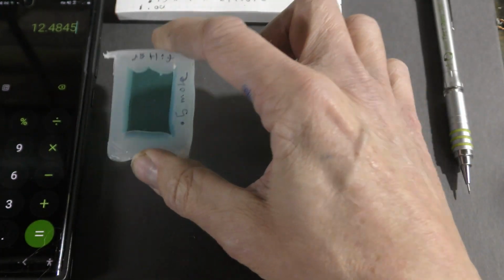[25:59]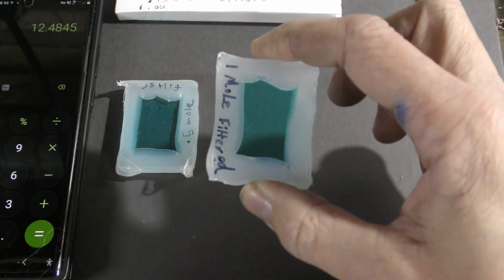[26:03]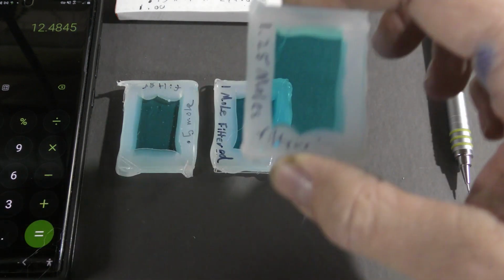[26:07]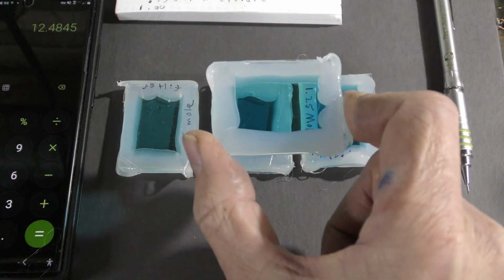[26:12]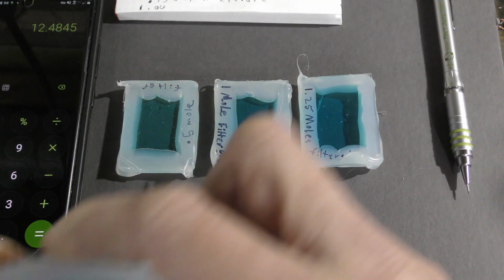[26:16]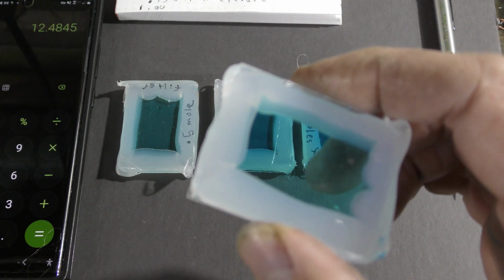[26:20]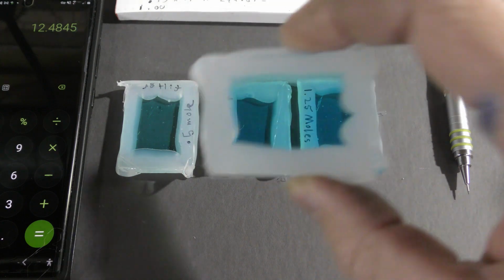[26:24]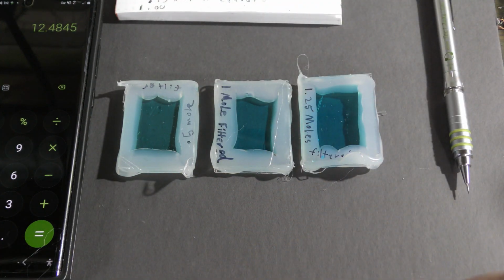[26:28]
So your task now, it's a lot of work, but it's going to be worth it in the end, because we're going to be able to now take samples of our bath and see where it's at. Is it undersaturated or is it oversaturated? All right, so to fast forward, just what I did, here is a 0.5 mole. Here is a 1 mole. And here is a 1.25 mole solution. And then I have an unknown. Ooh. So this unknown came from a bath that sucks. What's going on with it? Who knows, you know? We can all relate to that sometimes.
Alright, so this section of the video, I'm going to cover just the components. Later on, I'm going to show you how to shop for these components, because there's many places you can get these components. There's many links on Amazon. So rather than make links below, I've done that before, and what happens is usually they will go out of stock and then everybody freaks out. So I'm not going to do that. I'm going to show you how to shop rather than shop for you. Okay. Let's go over some of the components here and kind of introduce you to them. And then later on, I'll show you how to shop for them.
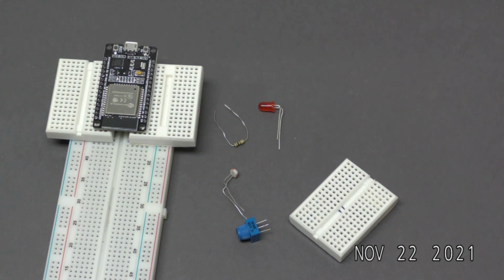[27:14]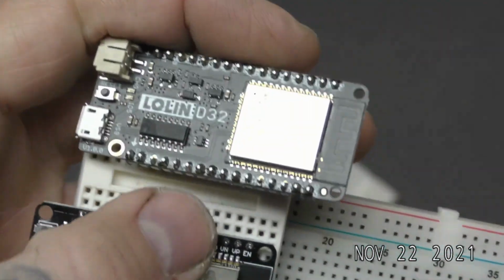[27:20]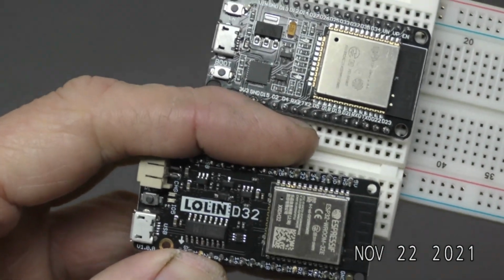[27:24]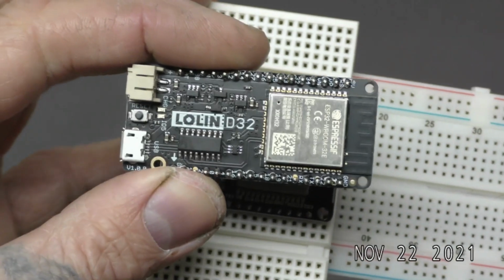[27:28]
So the first thing we're going to cover is the fact that you have these. Okay. These are ESP32s. They look the same, right? They look absolutely the same. In fact, there's probably about 20 variations of these.
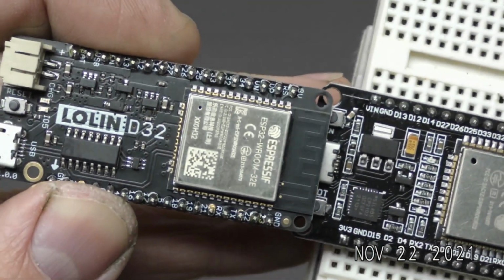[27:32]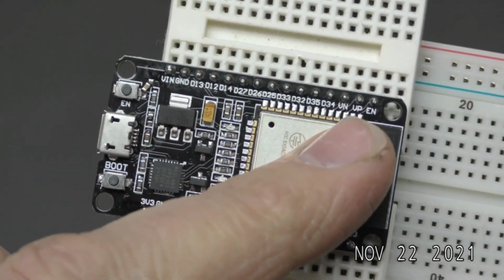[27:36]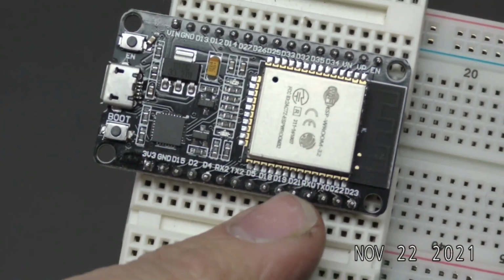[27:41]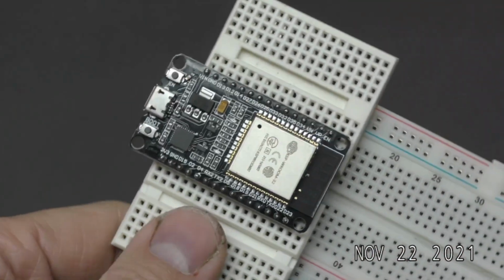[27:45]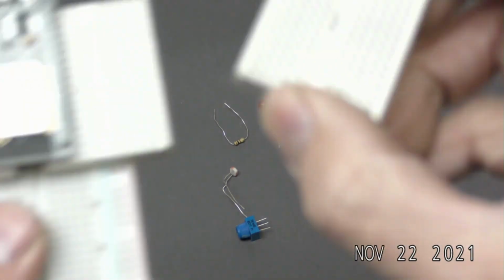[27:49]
You can see that this one is clearly labeled. Okay. And it's got these little numbers on it, and they're on the top. This is a wide variation. So you need a breadboard. You need actually three of these little guys.
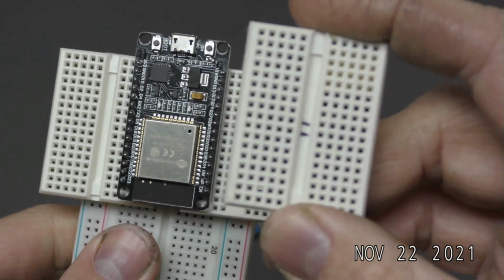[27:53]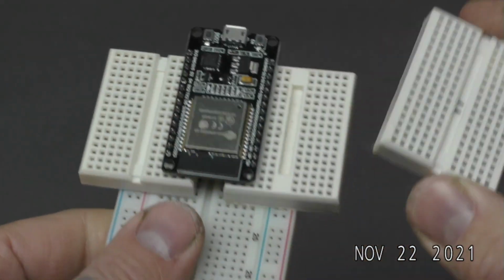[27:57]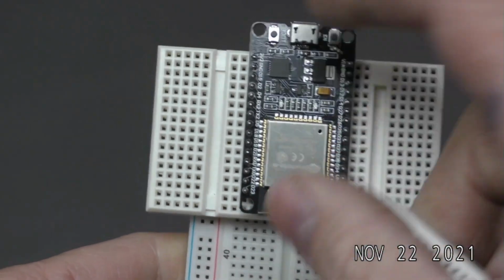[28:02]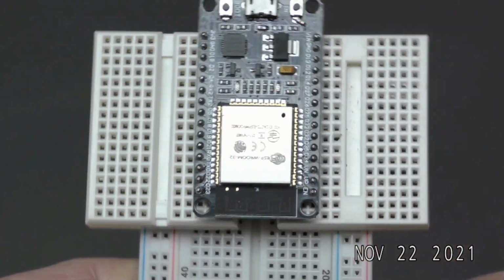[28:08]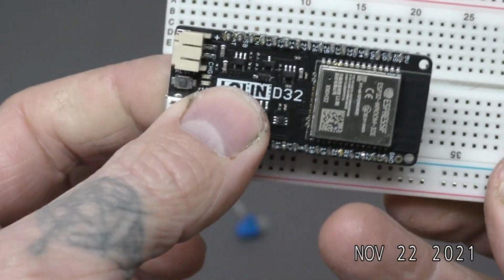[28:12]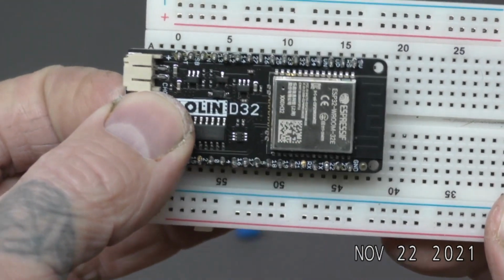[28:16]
So these are smaller breadboards, so you're going to have to buy a smaller breadboard. You'll need three of them. You'll need to stack it just like that and be able to plug in the unit. So you'll need three of those little breadboards. If you get the wider one and if you get the narrower one, you can use just a long breadboard.
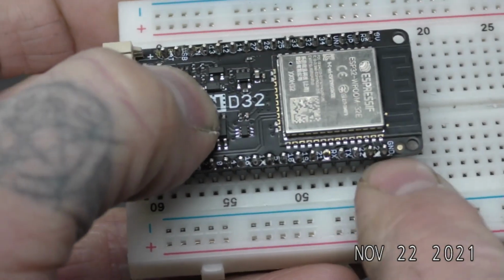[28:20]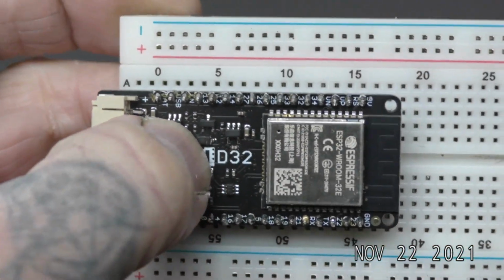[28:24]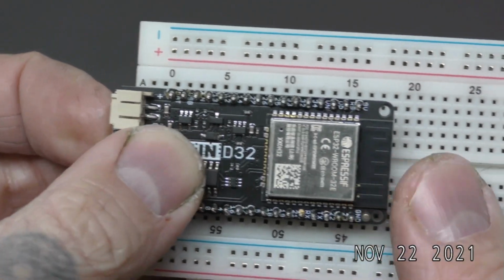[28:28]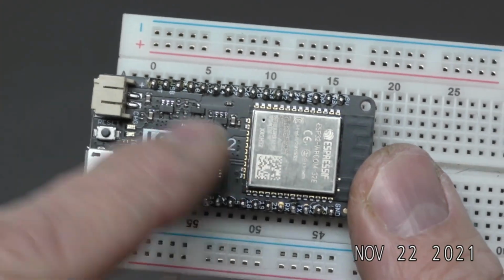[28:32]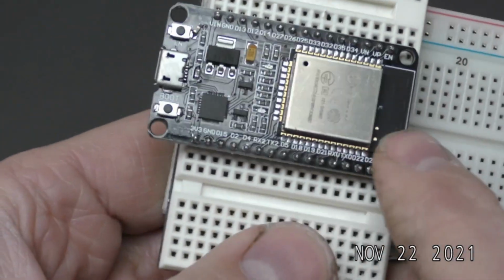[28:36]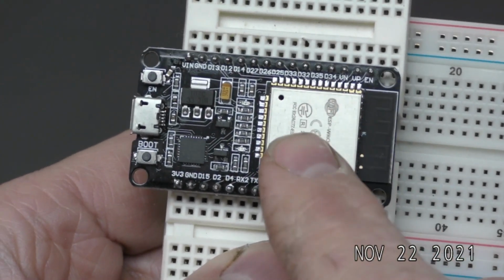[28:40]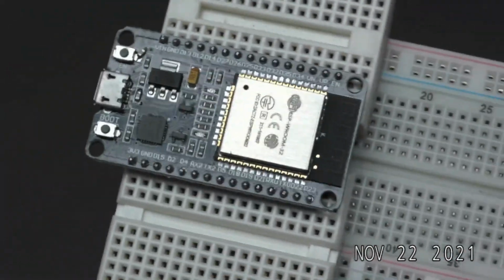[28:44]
So notice that now I have these open channels on both sides that I could plug wires in. Unfortunately, there's not a lot of them. It's not really worth it. This is a very high dollar one. I think it's like $30, whereas this one, you can buy three of them for like $9. I like this one. I'll show you in another thing about the
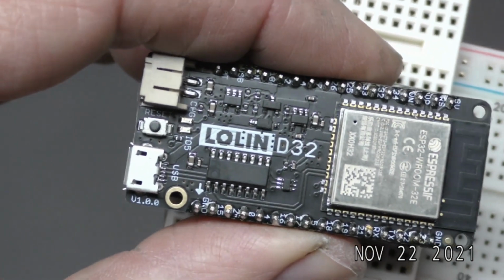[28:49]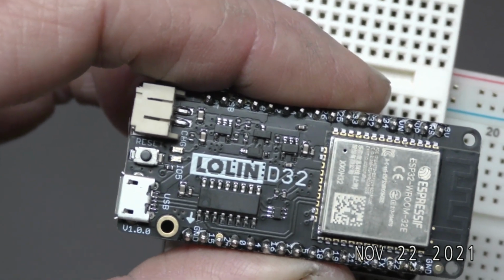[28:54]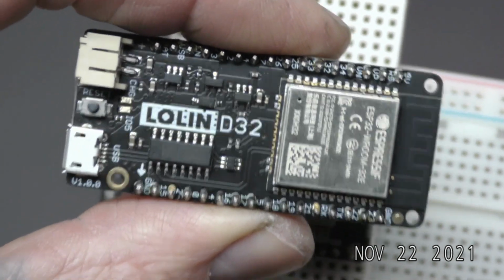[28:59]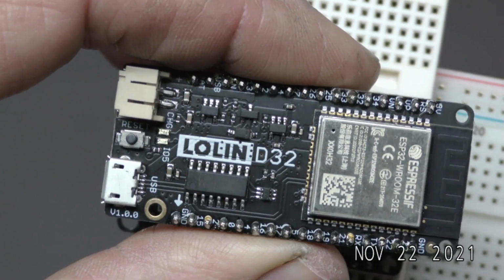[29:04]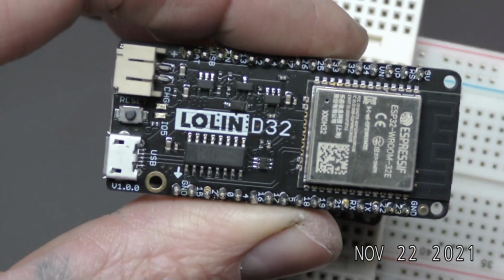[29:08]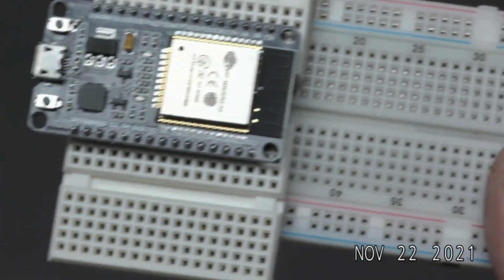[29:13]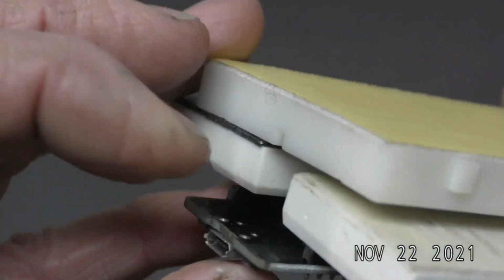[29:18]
D32. It's overpriced because it does some stuff that you will never ever use. Okay. So it's kind of like the Cadillac of D32s. It's kind of a pain in the butt to deal with. That's why I'm showing you this one. I got three other ones, but I would stay away from this one unless you really want to go super nerdy later on. Okay. Stick with the cheaper variations that are labeled on the top and not just labeled at the bottom. I'll cover that in a video.
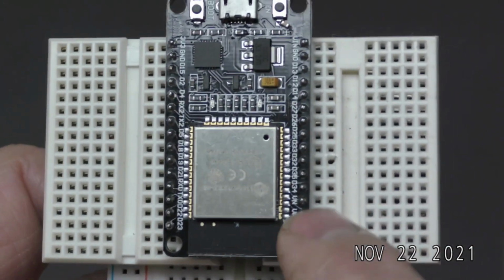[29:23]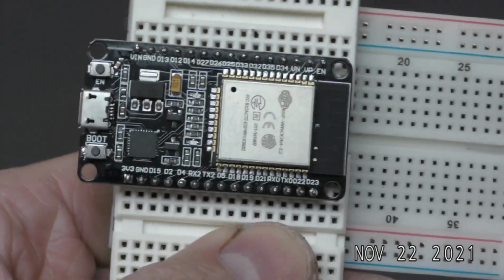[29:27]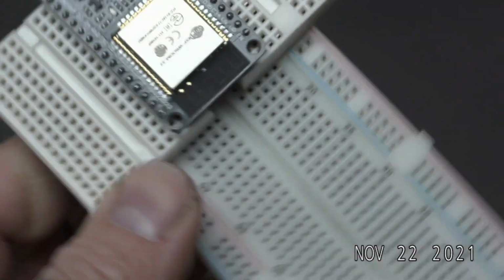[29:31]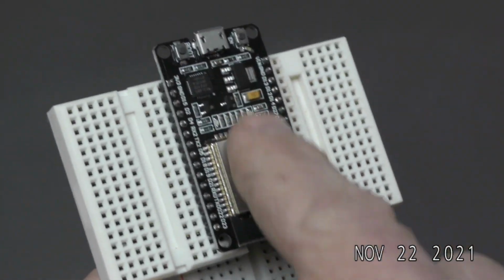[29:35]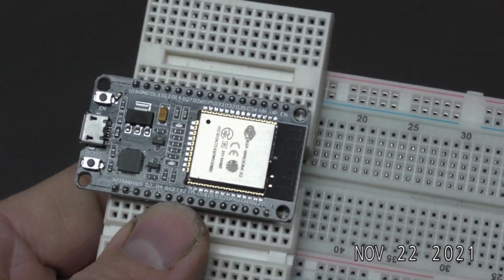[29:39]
It's all about, you know, the pin location and what you're looking for when you're buying this. All right, so three micro boards. I'll cover shopping for this thing later, but that is a D32. All right, what else?
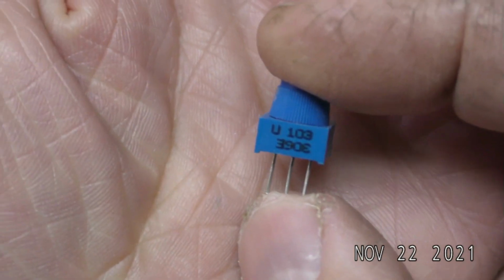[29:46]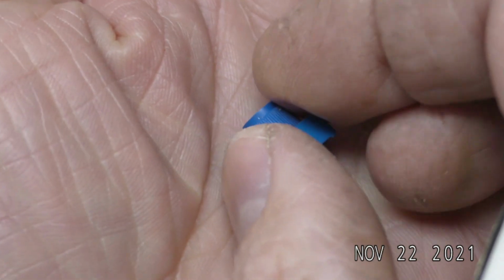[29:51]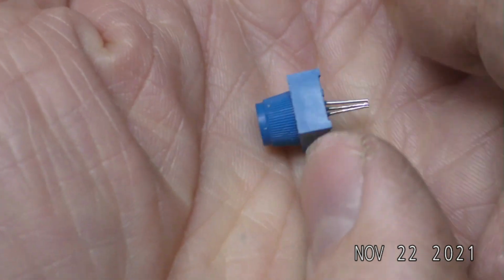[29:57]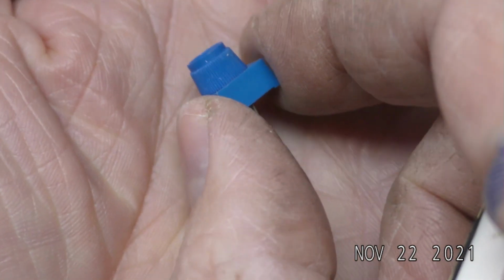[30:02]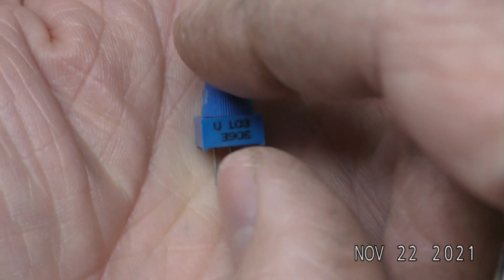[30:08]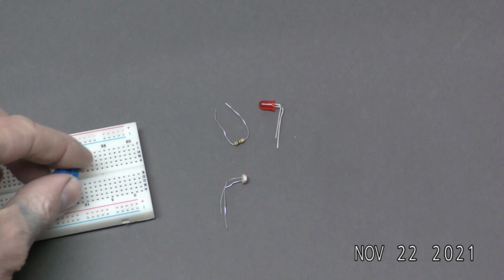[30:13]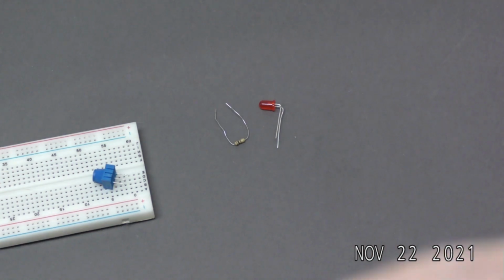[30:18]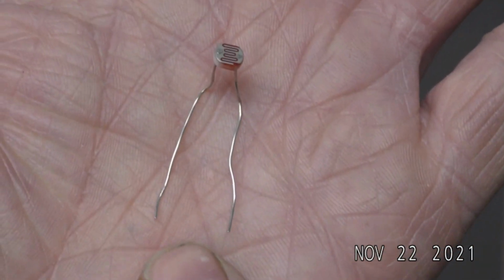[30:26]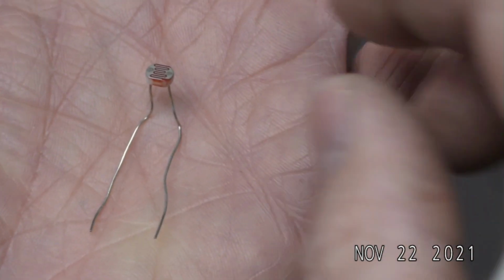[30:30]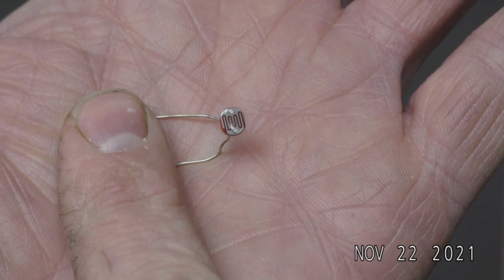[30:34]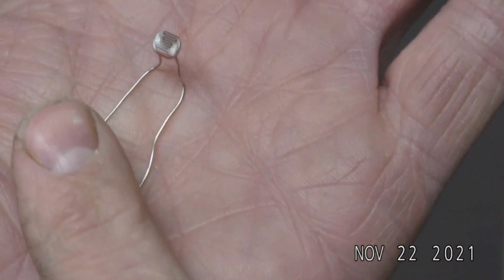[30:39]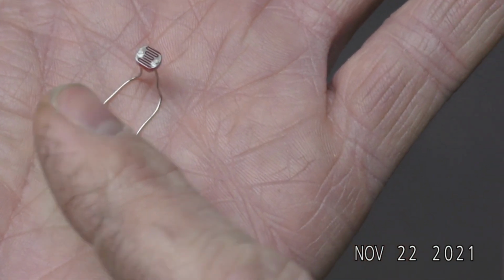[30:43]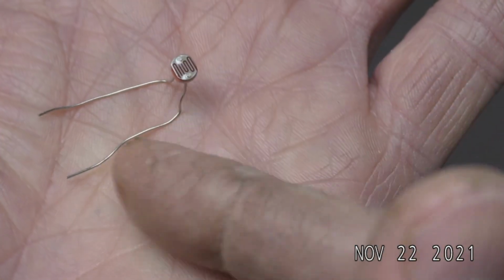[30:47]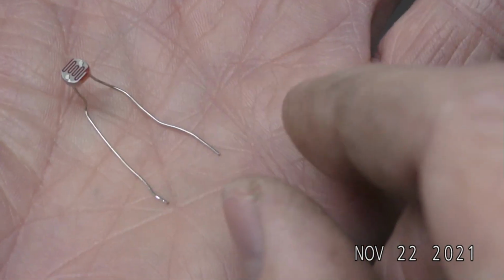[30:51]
All right, so this is a photocell. By the way, all the potentiometers work, okay? So it doesn't matter which one you get. It's just a little bit of a tuning issue. But if you're patient, it does tune. This is a photocell. They come in many sizes. This is a through-hole device, or a through mount onto a breadboard one.
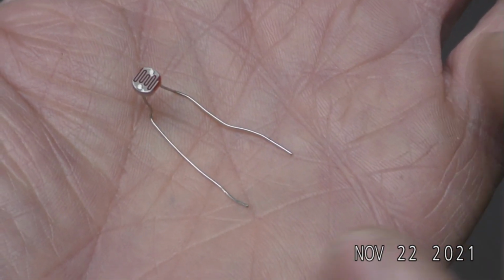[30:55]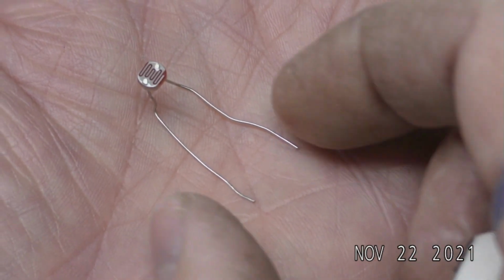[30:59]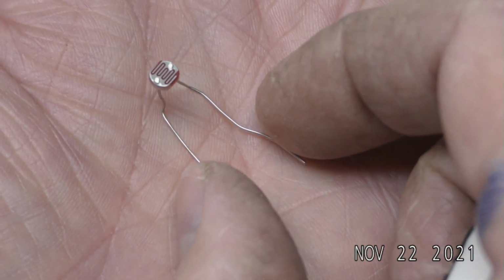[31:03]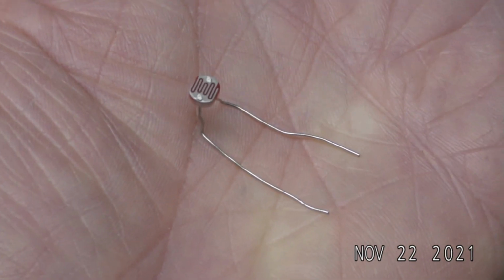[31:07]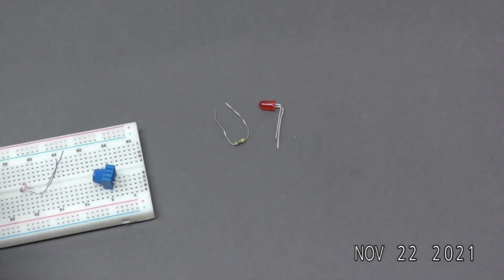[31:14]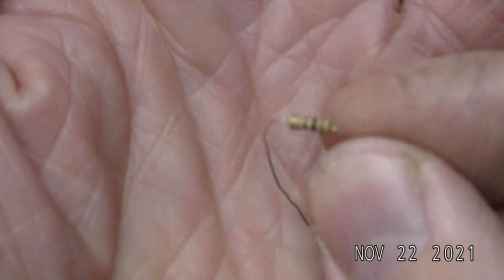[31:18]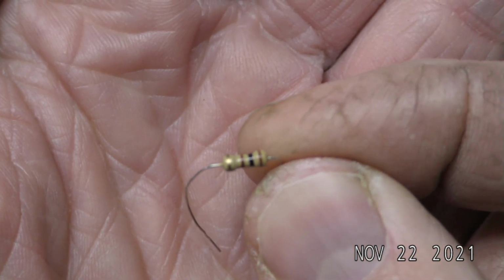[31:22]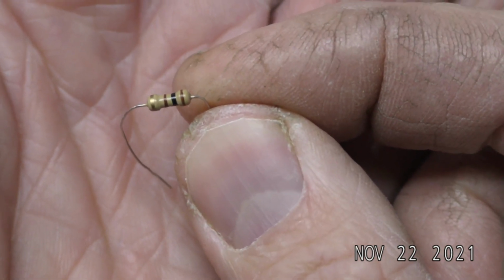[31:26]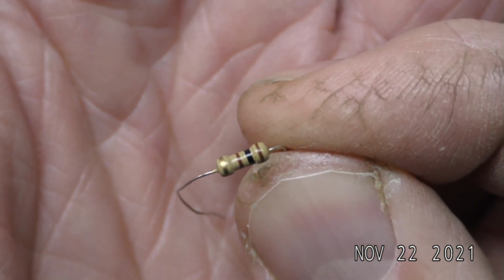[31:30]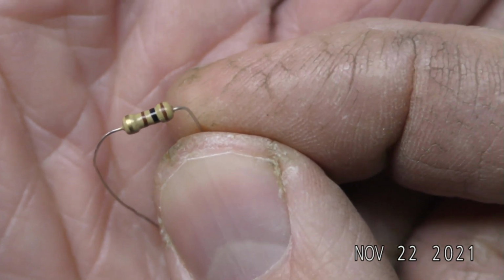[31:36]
That's all you need. Sometimes you can get these with big, huge external power and everything else attached to them. Don't get that. Just get the single ones like this. The cheaper, inexpensive one, the better. All right, a 10-ohm resistor. I wouldn't just buy a 10-ohm resistor. I would just buy a pack of resistors. It's cheaper. See the stripes on it? Brown, black, brown. That's important. That indicates what ohm resistor it is.
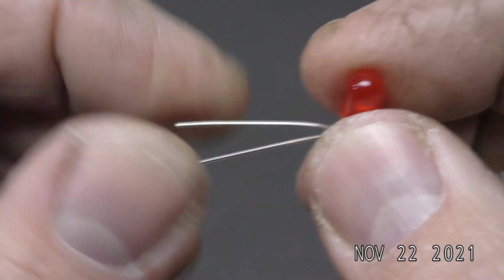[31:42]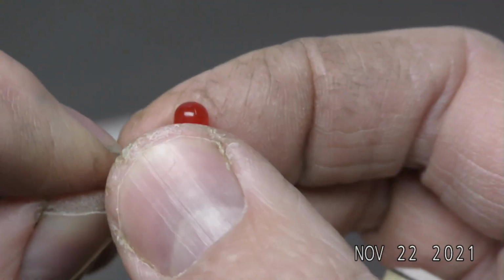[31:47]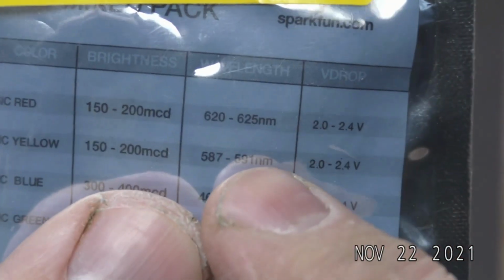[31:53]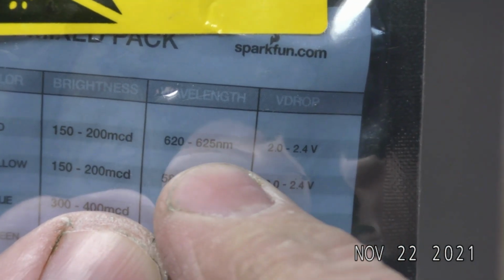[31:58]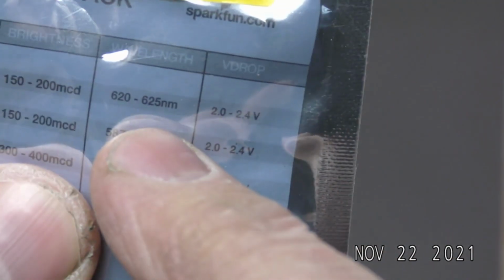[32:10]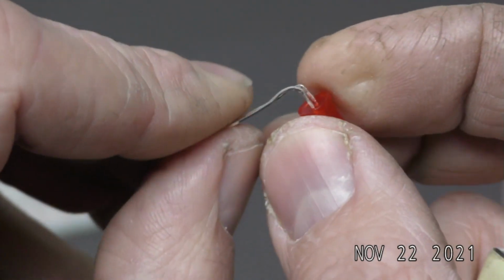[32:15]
Okay. This is a 625 nanometer LED. They usually come that way, so you can see 620 to 625. Later on, I'm going to try to experiment with the 650 to 700 nanometers, but I ran the 625 throughout this whole video, and I'm very pleased with the results. You might hear me rant about having a 650 or 700, but I did like 625.
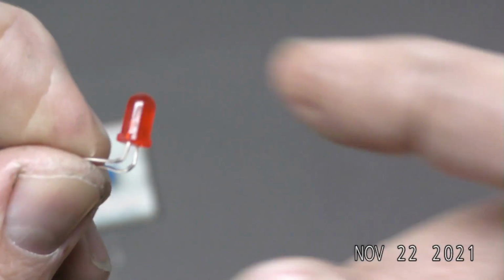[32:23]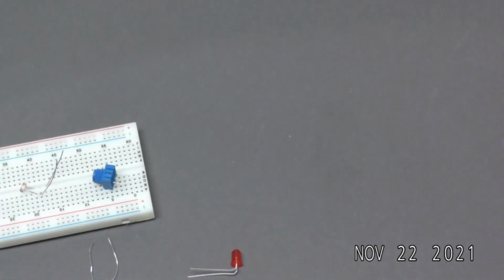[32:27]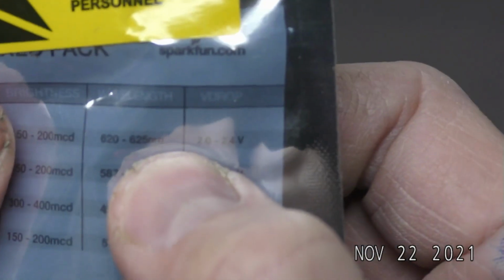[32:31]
So the wavelength of light is important because this wavelength interacts with the copper sulfate from anywhere from, I would say, 600 all the way up to 700. I just want to try up the upscale version of this to see what happens.
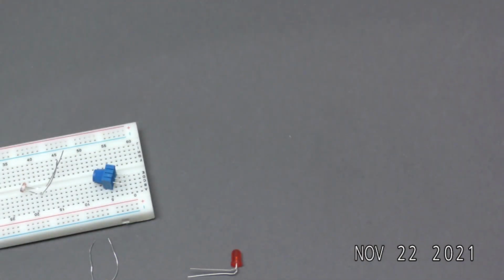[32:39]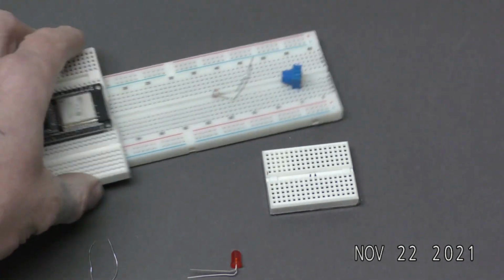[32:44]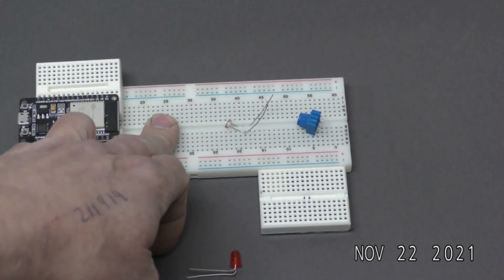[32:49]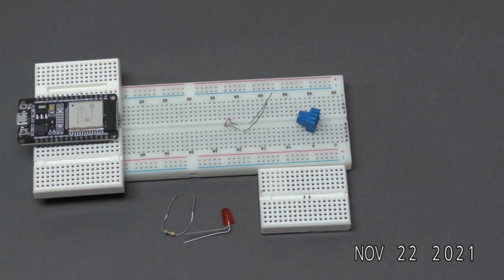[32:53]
And that's it. So not many components. Again, let's say you want to play around with it later on, you'll have a breadboard that you can play around with. All these parts are inexpensive. You're probably looking at $25 to $30 in parts to build a spectrometer that could roughly cost $700 to $2,000 if you buy one. So not a bad trade-off.
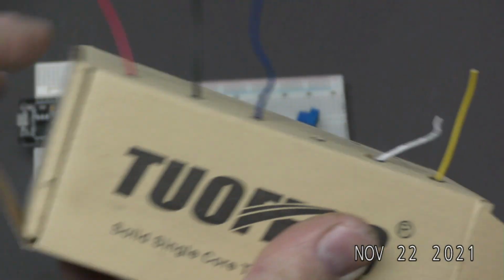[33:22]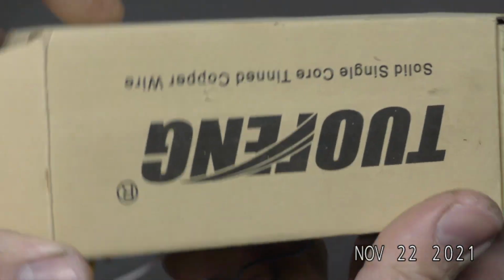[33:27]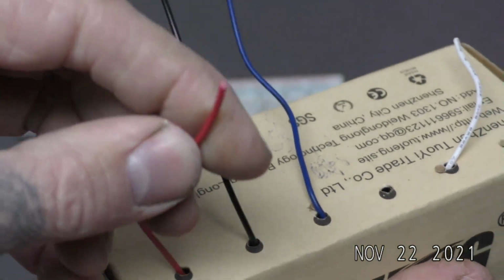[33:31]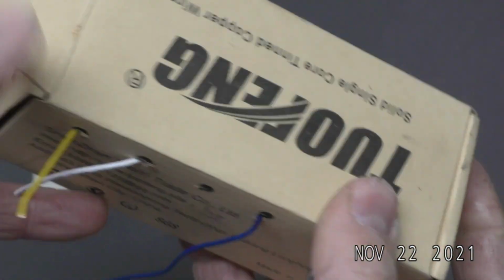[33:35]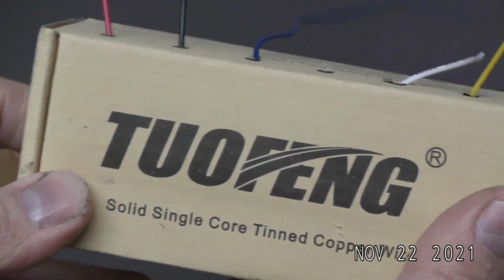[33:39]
All right, let's go into the rest of the video, and then I'll cover shopping on Amazon for this stuff and talk about it a little bit more. All right, so you're also going to need a box of 22-gauge wire. This is 22-gauge solid wire, and it comes in many colors. I would get the accessory pack where it comes in many colors. This is pretty easy to find.
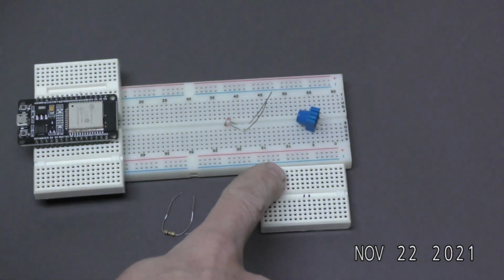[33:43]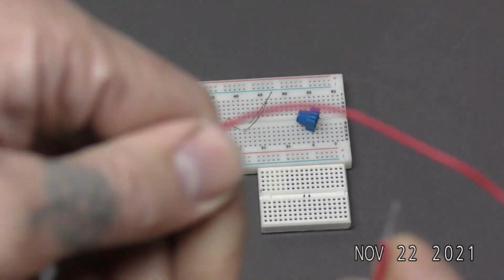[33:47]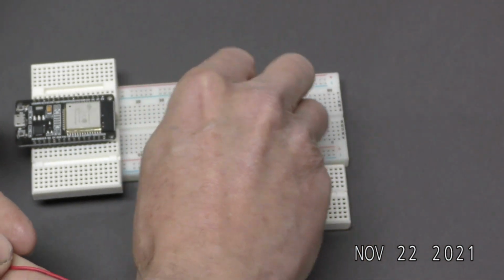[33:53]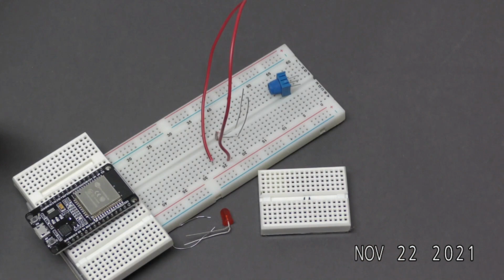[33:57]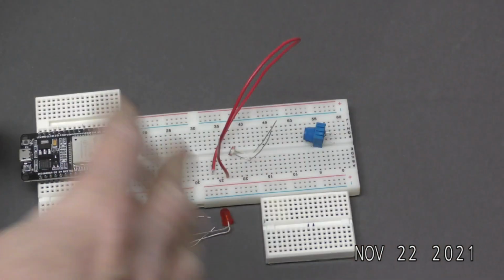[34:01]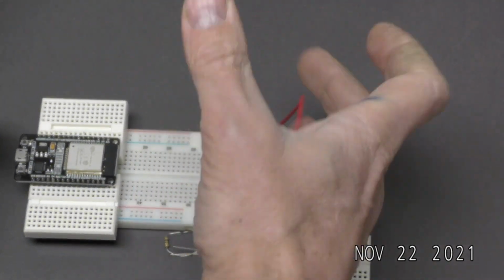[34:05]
The reason for 22-gauge is that it fits into the breadboard very easily. You just make these jumper wires. You can make them any length. You just cut off the ends like that, and they fit into the little breadboard. You can jump them all around and be as neat as possible or just as messy as possible, but it's all about just fitting in the breadboard correctly, and 22 gauge fits nicely into breadboards.
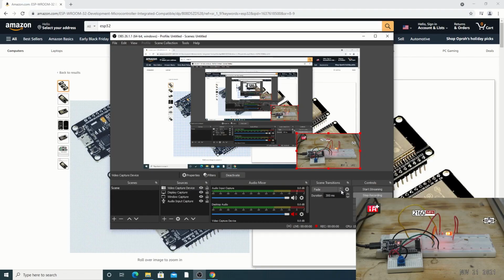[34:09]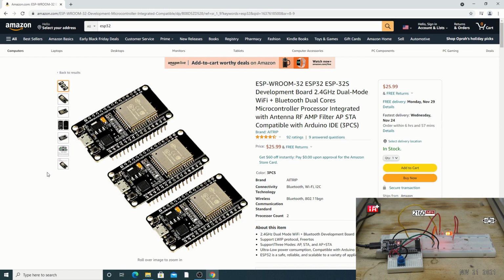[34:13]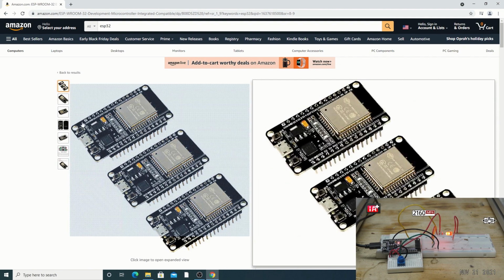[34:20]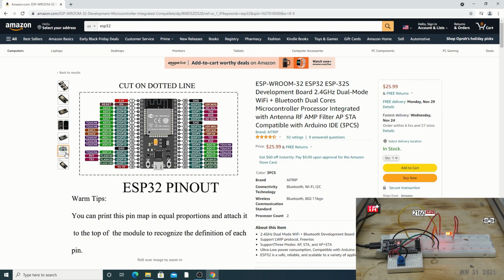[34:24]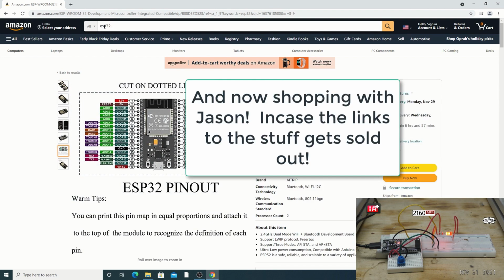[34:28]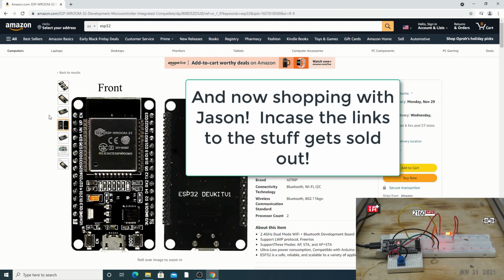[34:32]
All right, so before we get started with some of the software, I'll show you how to shop for some of this stuff. I'm on Amazon right now, and I'll help you shop. Okay? So what we're looking at is the ESP32. It's a microcontroller. Looks like this.
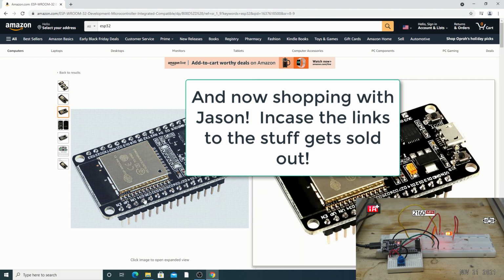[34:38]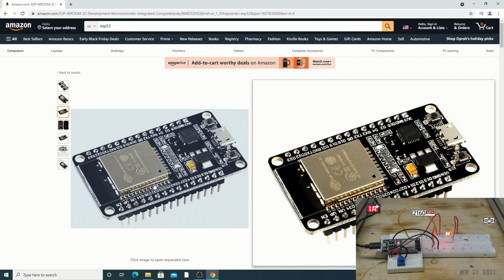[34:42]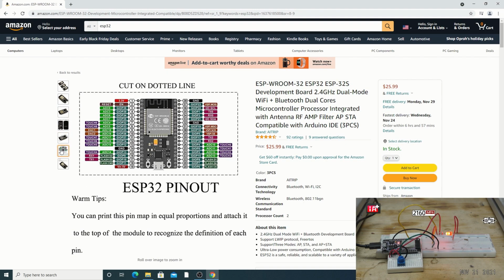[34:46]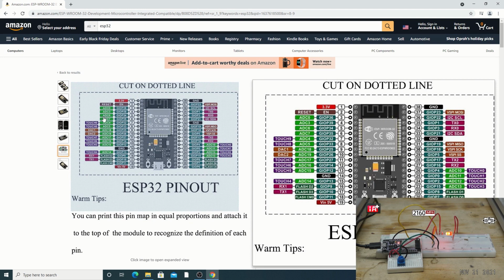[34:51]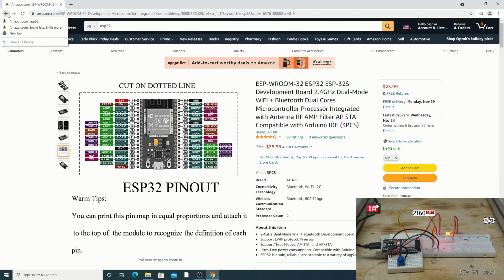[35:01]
Okay? There's different variations of it, and some have different pinouts. See how pin 34 is right here on this model? This is the model you want. And you can look over here and you'll see that pin 34 is the fifth one down. Okay. This is a good indication of which ones you're getting. Now, there's tons of analog connections here that we could choose from. I'm just showing you that this is a like-minded one by using that pin as a reference. So these little green ones are analog. That means it can handle calculations from an analog sensor like that photocell.
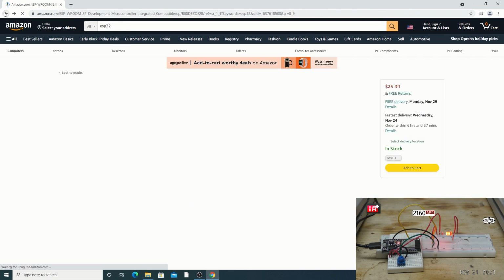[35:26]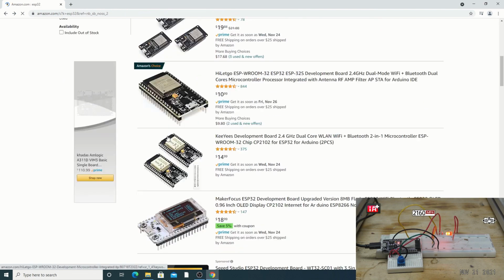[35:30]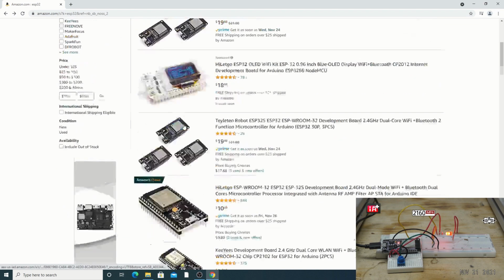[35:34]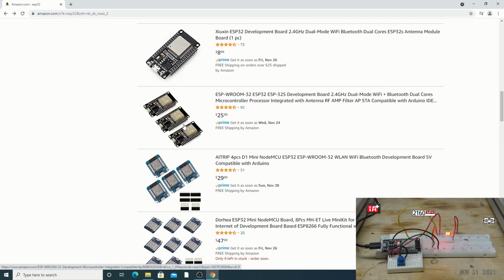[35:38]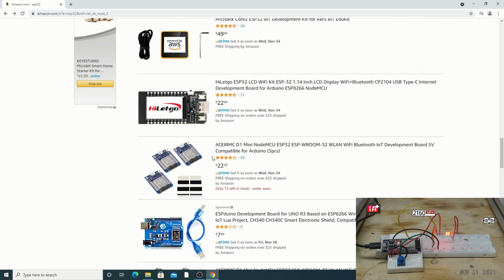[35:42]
All right, so what about all the other ones? Let's look how many there are. So here's the ESP32. If you typed it in, boom, boom. There are so many, right? So many. Well, that's that. If you follow that reference I just gave you, you can always buy the right one.
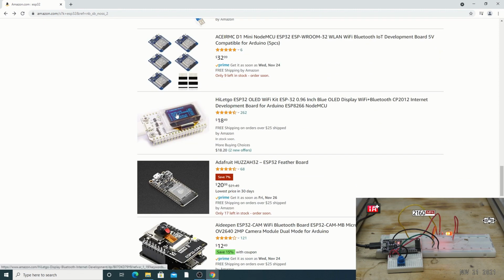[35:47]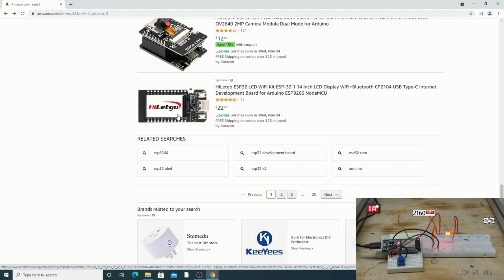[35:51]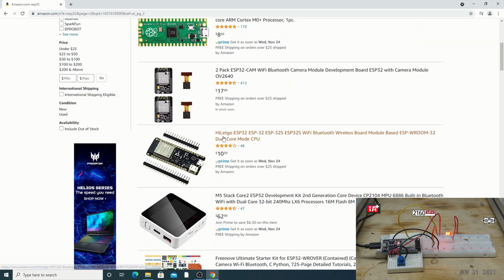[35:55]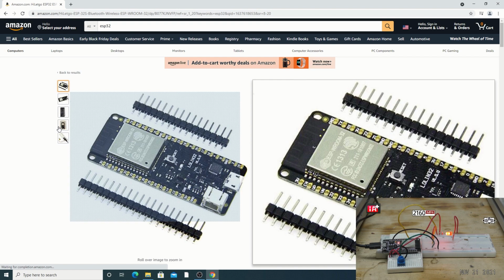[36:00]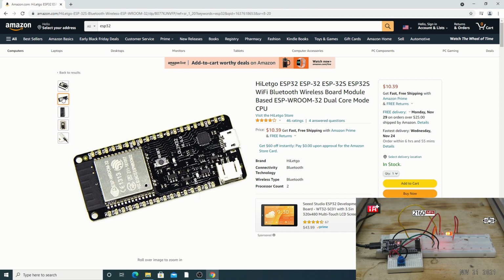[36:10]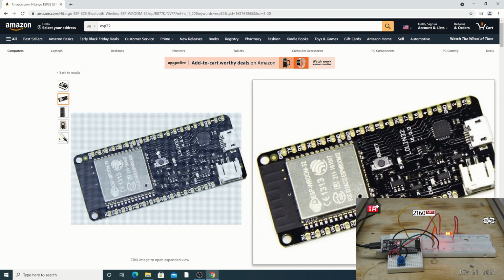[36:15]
Stay away from this one. You'll want it because it has a little screen, but it's hard to solder. Yes, it's impossible to solder that thing, even if you're a solder master. So this one right here is one you should stay away from unless you know what you're doing. It's got a battery. It is a nice little machine. It's got print on the bottom. You'll have to look at the pinout to find out what is the analog, and it will not match. Okay, so stay away from that one.
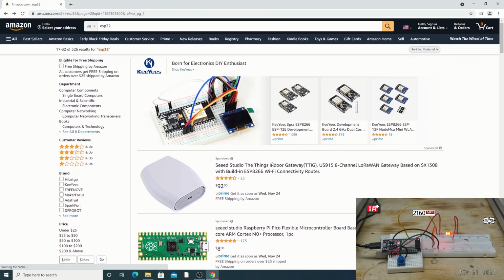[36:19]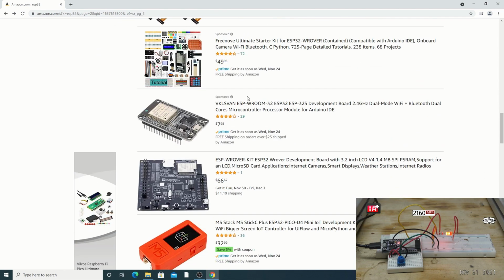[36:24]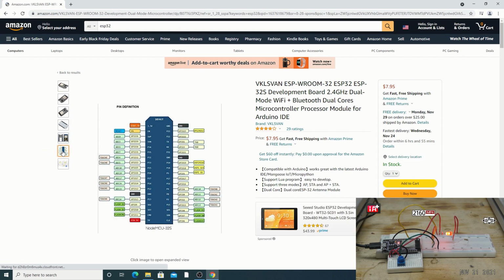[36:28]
So many. Oh, here's a nice one. See? Here's the pinout. Okay, what about the 34? Yes, and it's ADC6, so these two numbers match. So this one would be a good one. These are matching. The ADC6 is matching with GPIO34. Other than that, it's a good microcontroller.
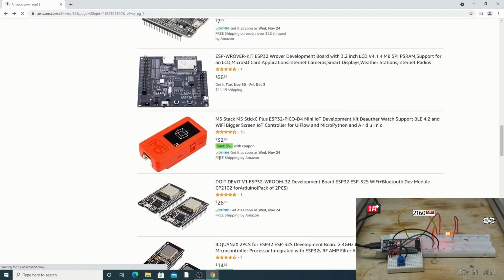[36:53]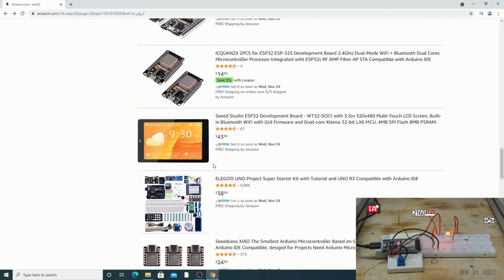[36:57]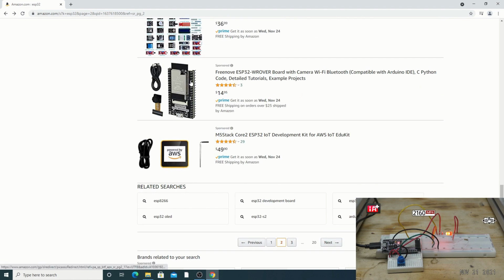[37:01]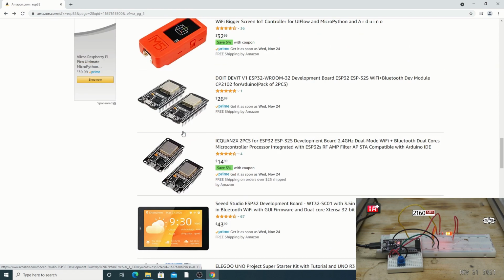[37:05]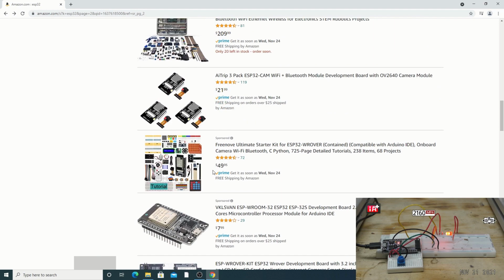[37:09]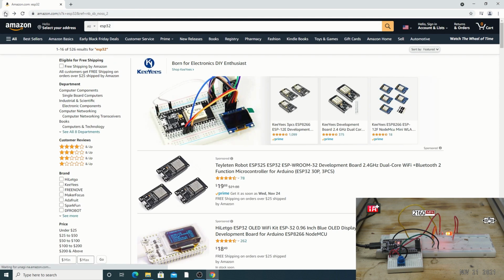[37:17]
The reason there are so many is that it's pretty much an open game for the design. You can just own a company that can make these things, and whoever owns the one that has the least amount of energy draw wins. That's how it works. But we don't care about energy draw for this application. We want processing power. All right. So that's the ESP32.
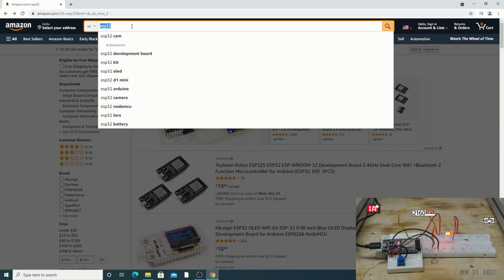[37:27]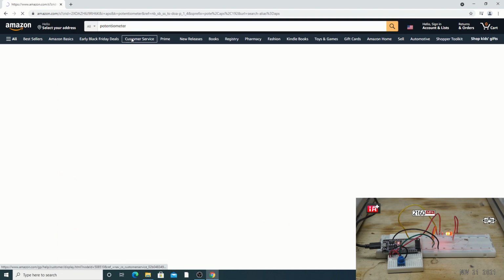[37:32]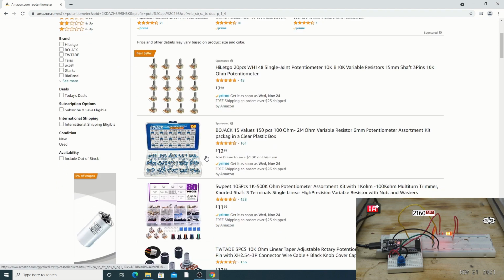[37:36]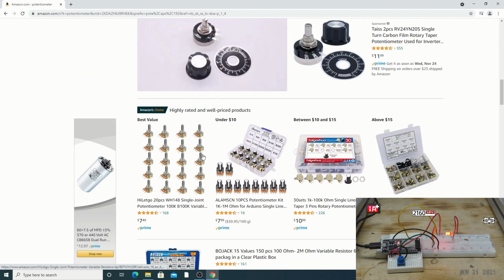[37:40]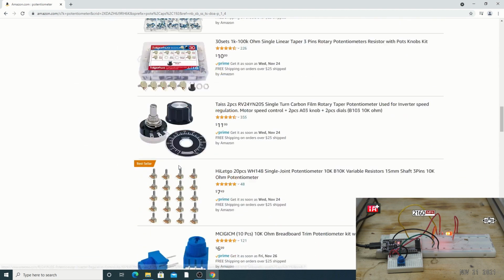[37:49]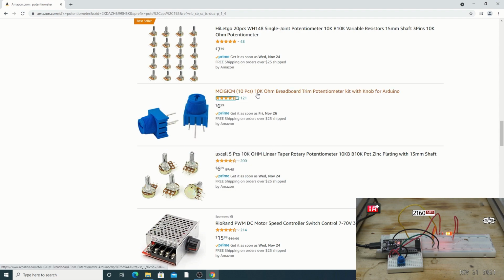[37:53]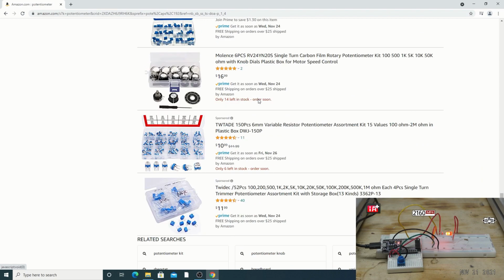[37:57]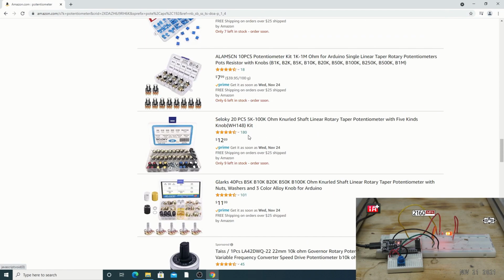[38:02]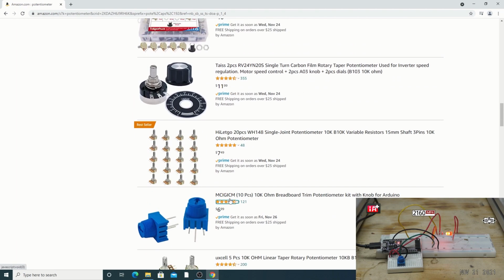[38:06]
Next, what about the confusion about the potentiometer? All right, so tons of potentiometers. They all function about the same way. Here's these ones, the metal ones, like I showed you. And I like those because they have a little metal knob. You know, it feels good to turn them. That's all. But these will work just fine. Now, there is 10k ohm, okay? And if you look down here below, there's going to be an assortment pack, I think, somewhere. So they look like this, but there's a whole bunch of them.
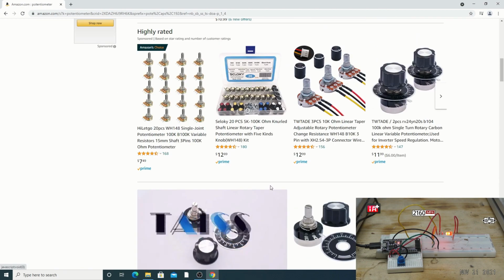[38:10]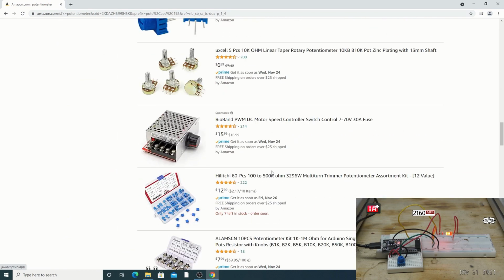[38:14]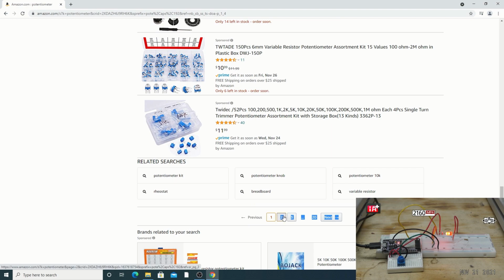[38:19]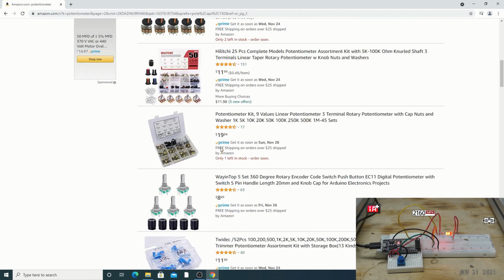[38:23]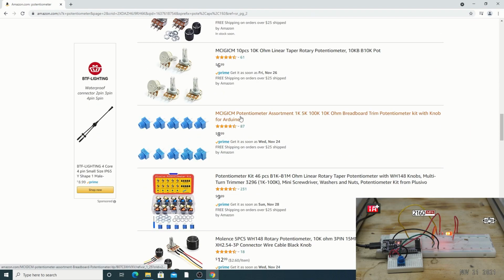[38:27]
It might have been bought out. Right here. Okay, so these are 10k. Here we go. Here's a nice one. So this potentiometer kit comes with 1K, 5K, 10K, and 100K. What's nice about this one is it lets you play around a little bit more. And the more K you get, the finer adjustment you get. But as you go up in the 10K region, it's really sensitive. So the 1K might be sufficient. I would say 4K is the minimum you should use.
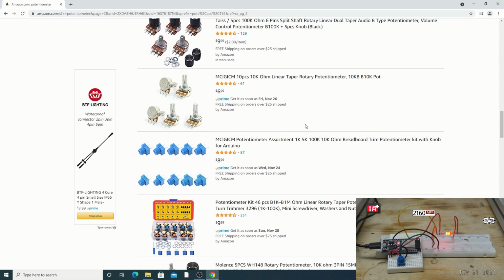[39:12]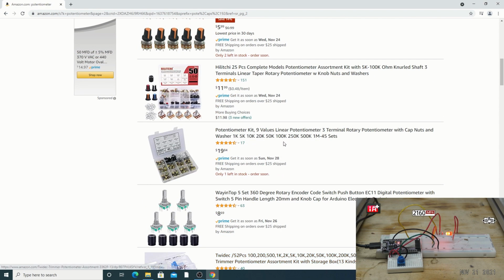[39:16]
And these two are just going to be something you play with. So I would start with 5K and work your way up. I don't know what the one is that I showed you in the video just a second ago, but we'll find out. They're not labeled very well. So I'm pretty sure it's going to be a 5K. Hopefully. I'll show you what adjustments look like based upon those.
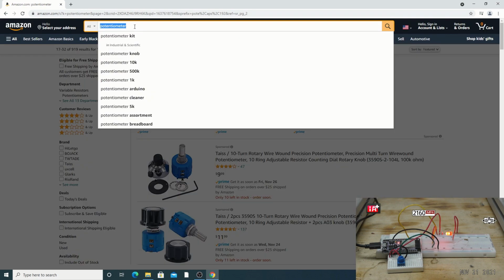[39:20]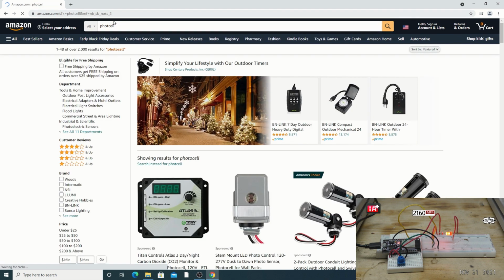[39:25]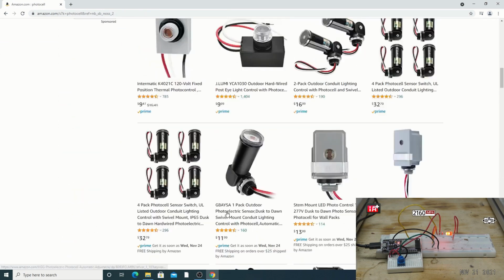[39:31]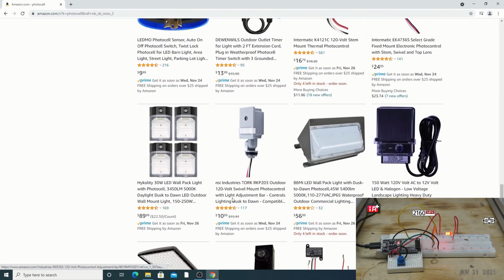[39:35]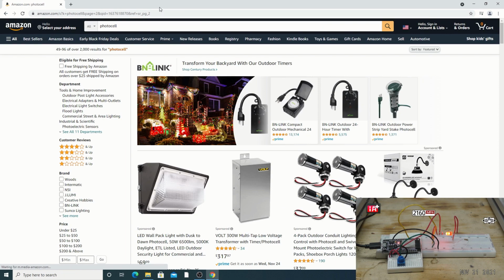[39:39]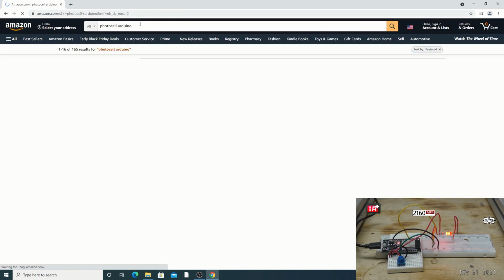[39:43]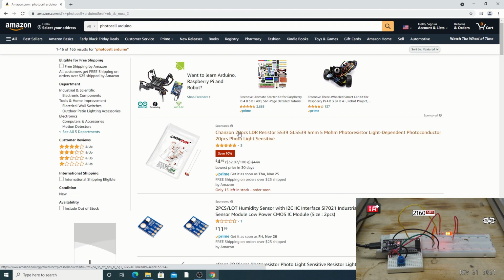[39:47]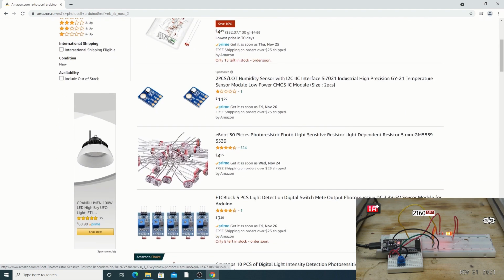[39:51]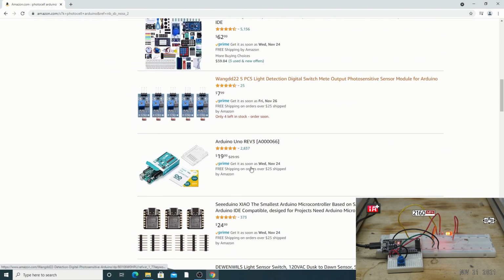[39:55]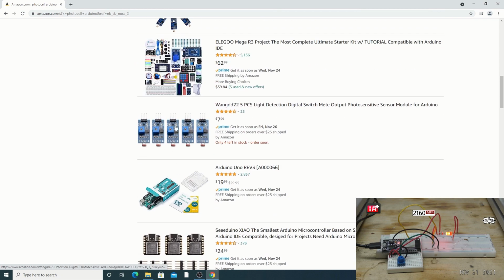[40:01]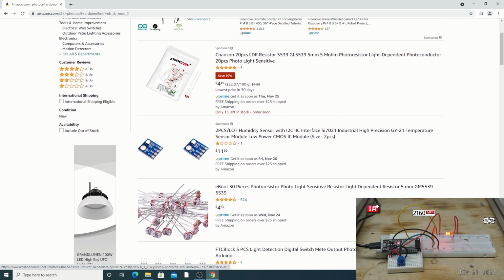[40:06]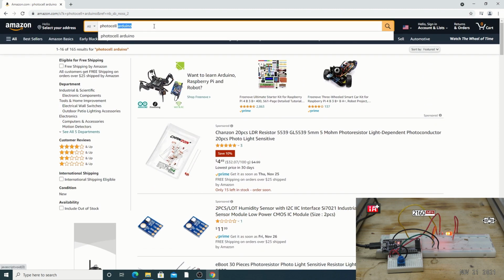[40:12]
All right. The photocell. Okay, you're going to get all these crazy things for photocells. And what we want is the small one. Yeah, these things. Yep, those work. Don't get this. These work. We don't need the processing. We don't need the power of these. These will work just fine for what we're doing. So $4. How about that.
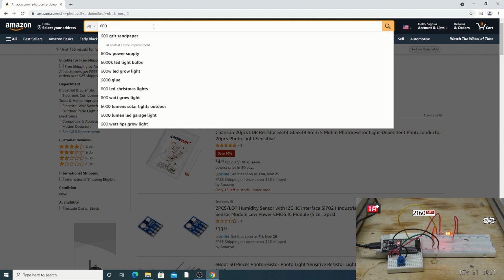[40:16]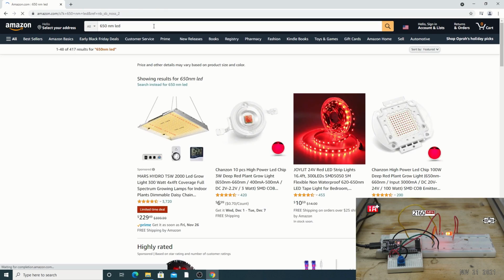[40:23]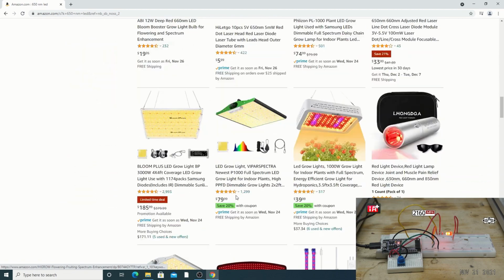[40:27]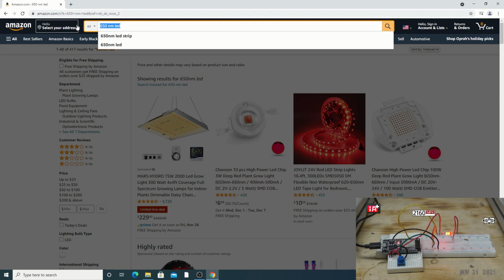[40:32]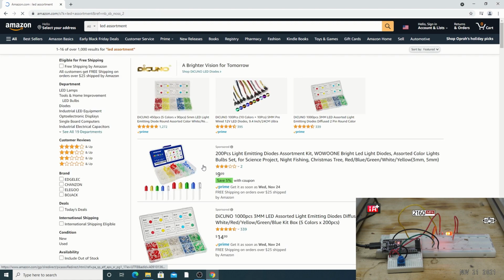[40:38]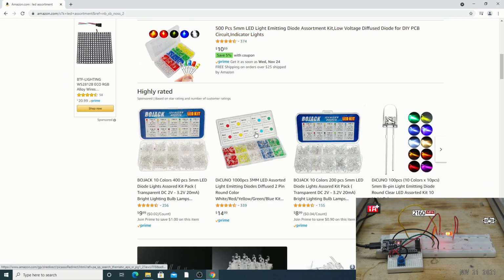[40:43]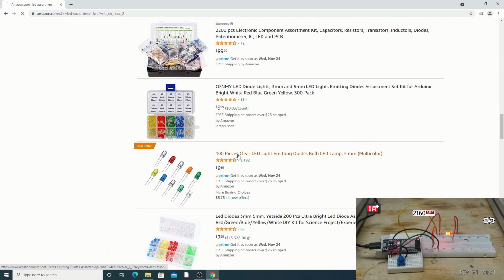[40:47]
650 nanometer LED? So when you type that in, it's going to lead you to something like this, and it's not going to show too much. But if you type in LEDs assortment, you get this. And then you get all kinds of LEDs for about the same price. But now you have to know what you're looking for. So I'll show you, let's say this one right here.
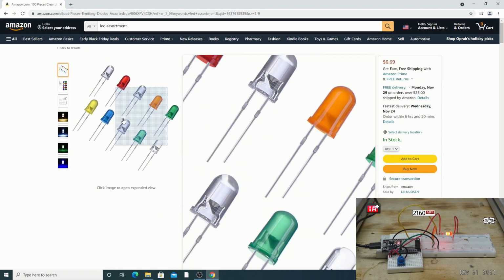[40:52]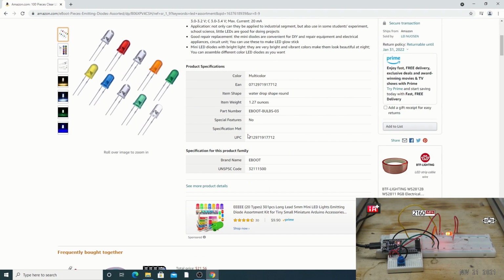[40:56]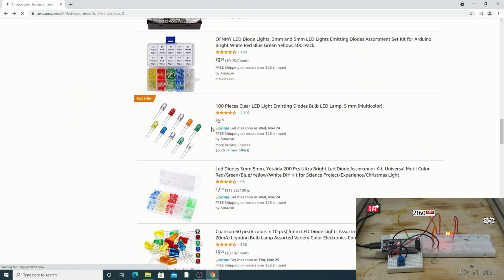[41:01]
It will show you these, but will it give you the nanometers? And no, it does not. Okay. But don't buy that one. But this one.
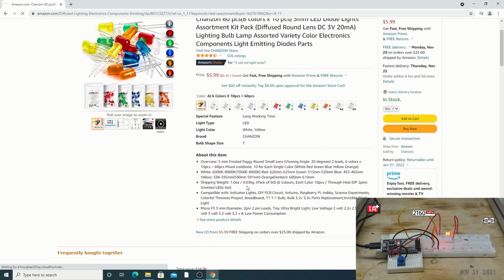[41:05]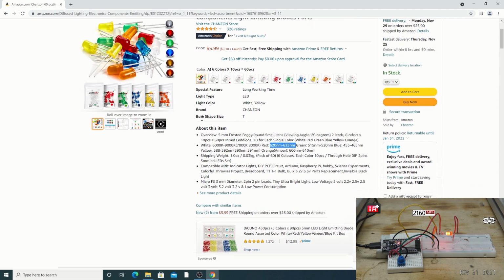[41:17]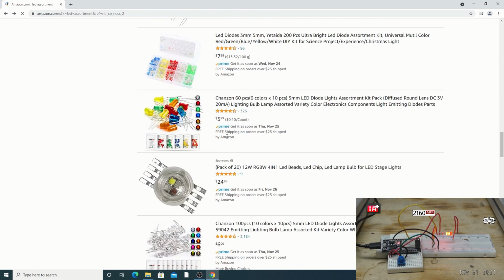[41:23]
Here we go. So the red one in the pack goes up to 625 nanometers. That's a good start. So we can go with this pack. And look, you get all these colors that you can play with later on. $5.99. So that's how you shop for the LED: you just look for the one with nanometers.
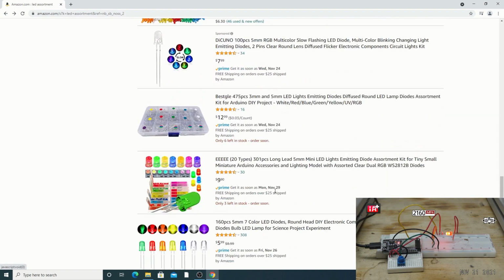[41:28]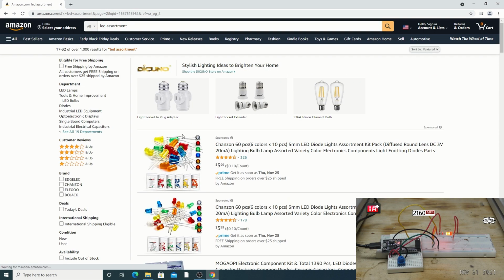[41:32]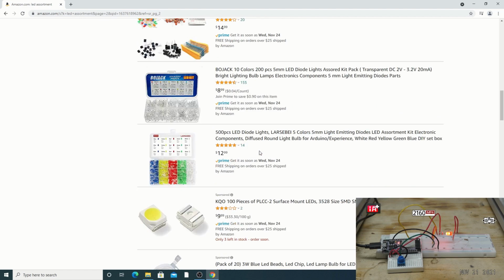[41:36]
If they have a 700 one, that'd be awesome. 700 would be kind of rare. I'm telling you that right now. You'd probably have to go to Mouser or Element 14 to get it.
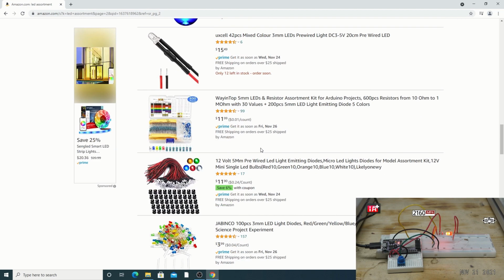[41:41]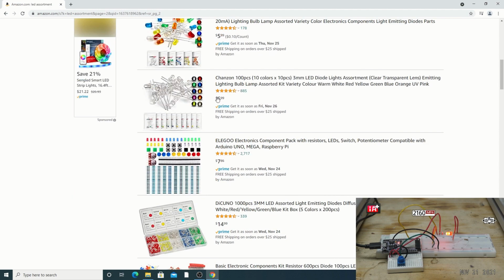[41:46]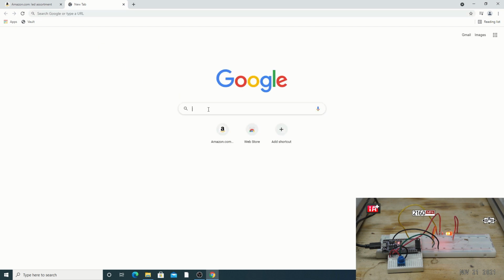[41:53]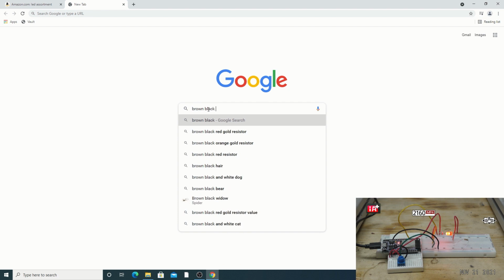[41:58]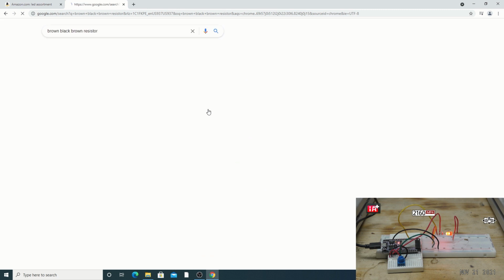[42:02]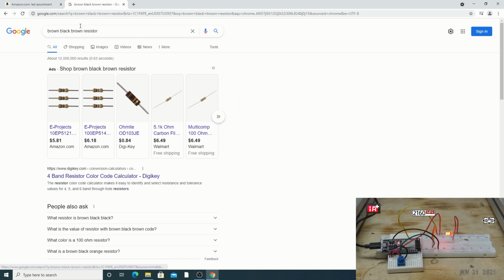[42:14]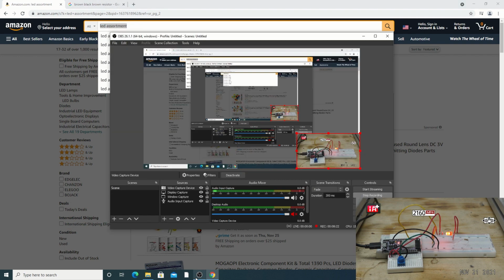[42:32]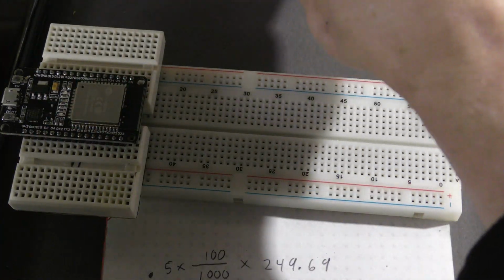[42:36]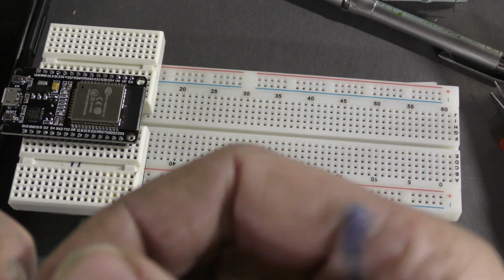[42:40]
Now that we have a list of things that we need, I'll also provide them in the list below, but just in case they're out of stock, that's how you shop for them. All right, so let's get started with this. It's a pretty easy build.
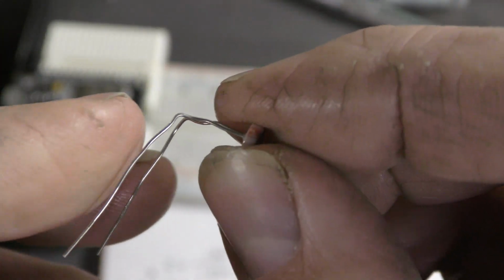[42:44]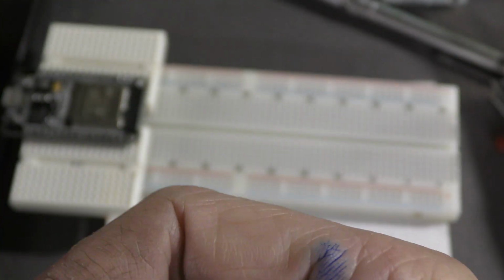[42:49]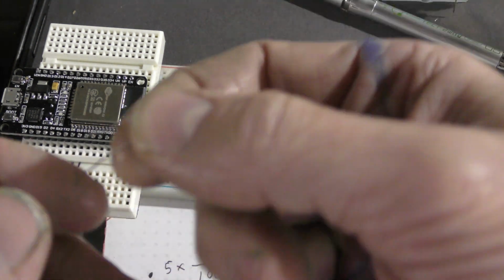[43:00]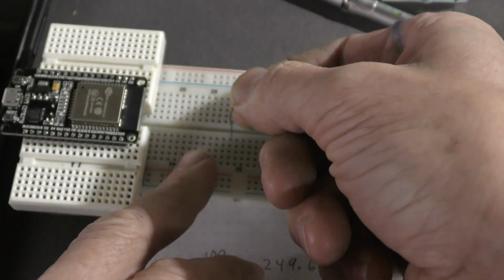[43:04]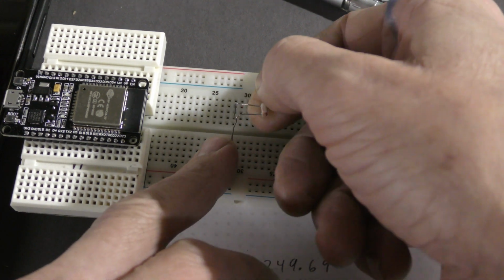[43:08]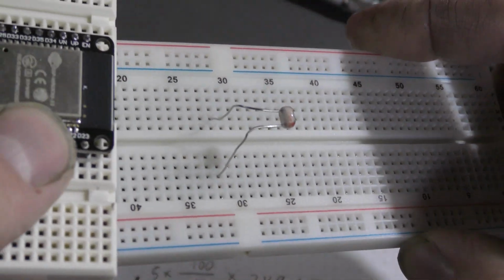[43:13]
All I did was bend this like that. Again, you might want to make this an enclosed box thing. You might want to add this, make it a little bit prettier in the long run. This is just the breadboard variation of it, so you can get started. So you would place this photocell on your breadboard. Yeah, and it goes like that.
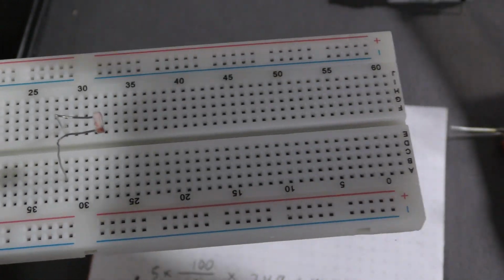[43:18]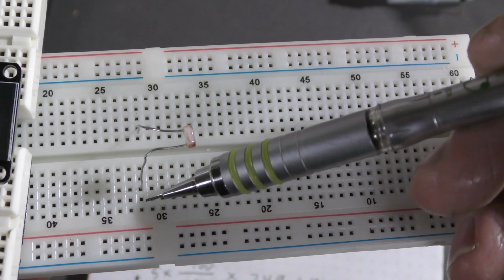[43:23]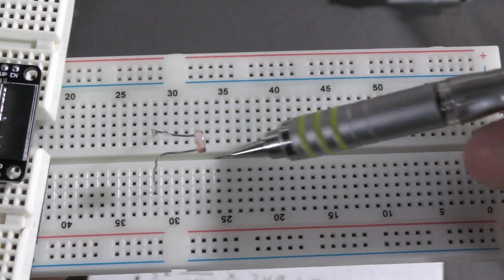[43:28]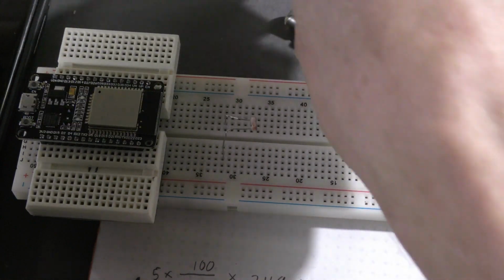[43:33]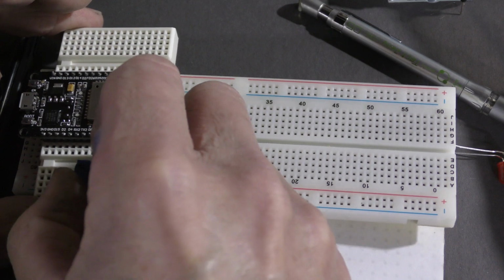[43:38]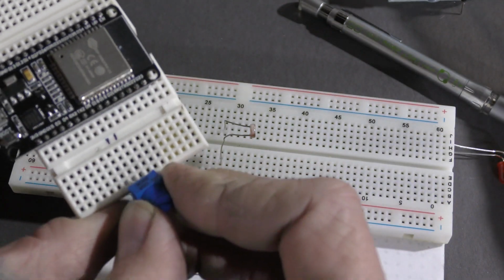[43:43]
Well, it doesn't matter as long as one row is being taken up here. Okay, this row and this row. You can stick it anywhere really, but make sure that it's got this channel between the two. Okay, we got our potentiometer. I'm going to stick that up here. It's got three prongs, so we have to know what rows we're taking up, so we'll have to look at that here in a sec.
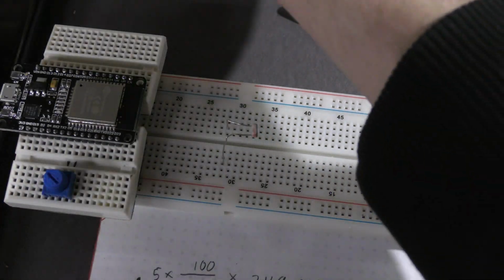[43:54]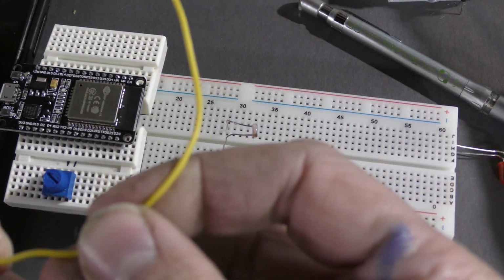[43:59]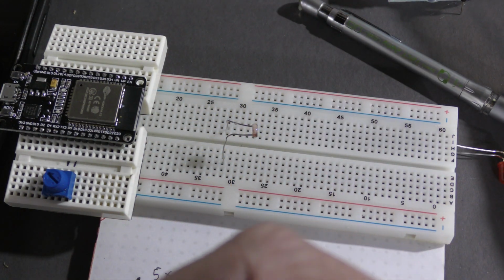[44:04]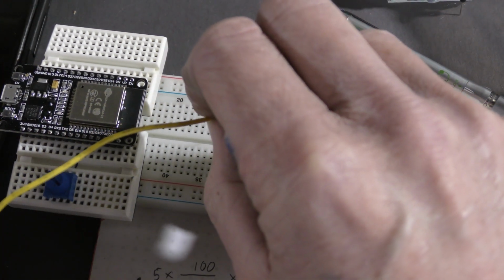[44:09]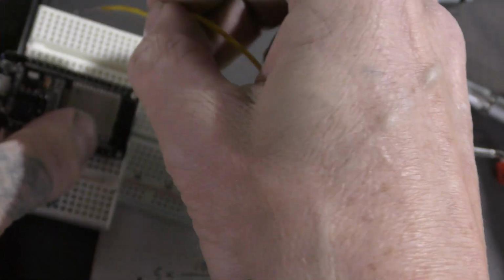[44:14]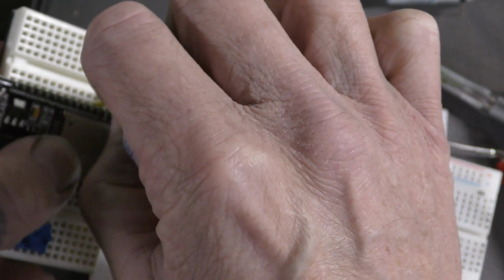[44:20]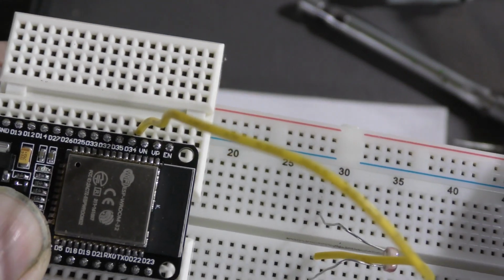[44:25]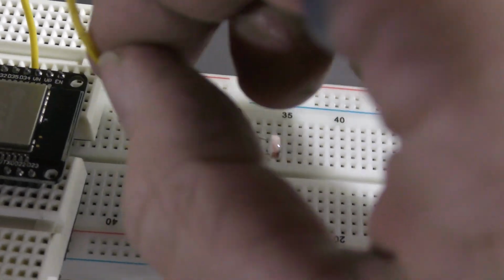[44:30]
Okay, I always use a color method. I'll use yellow for data. So in this case, plug that into my photocell channel and this into D34, which is my analog channel on my ESP32. D34.
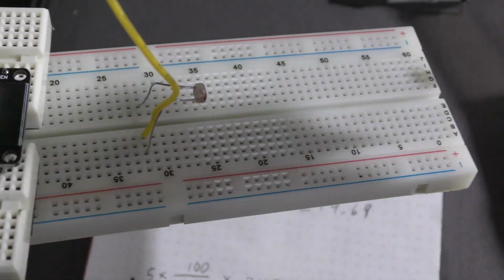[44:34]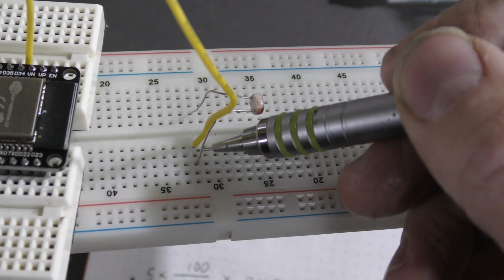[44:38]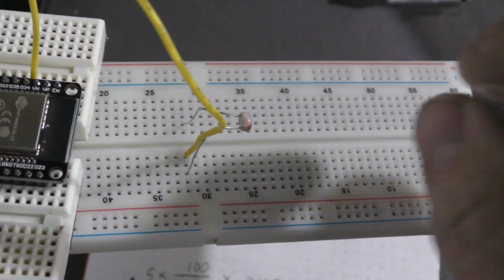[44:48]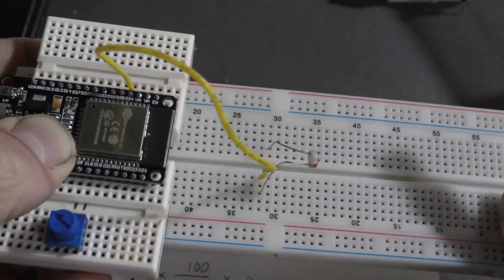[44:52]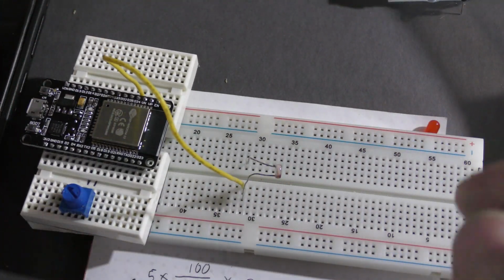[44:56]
All right, so in other words, if you're new to electronics, this whole row is connected. You can think about it as soldering wires together. So now these two wires are soldered together. Not really, but that's what a breadboard does. It allows you to play around with things without soldering them together. All right, so we got that.
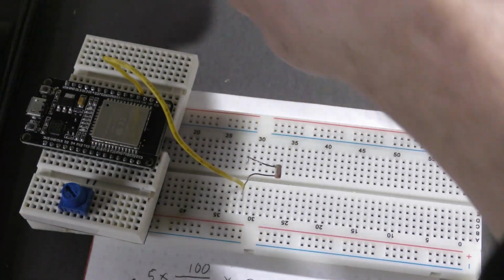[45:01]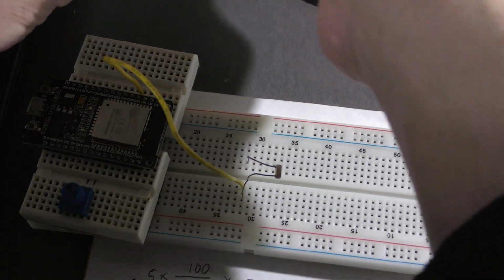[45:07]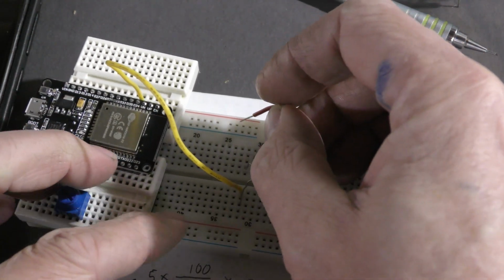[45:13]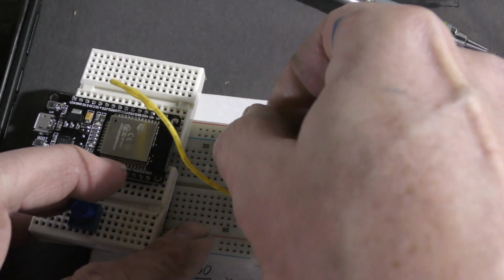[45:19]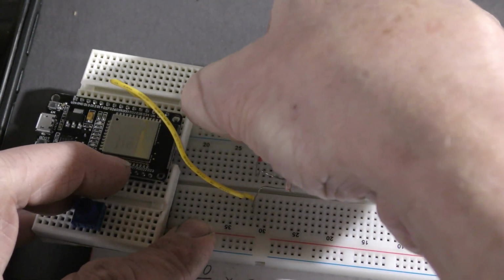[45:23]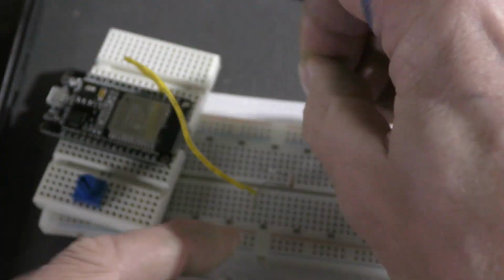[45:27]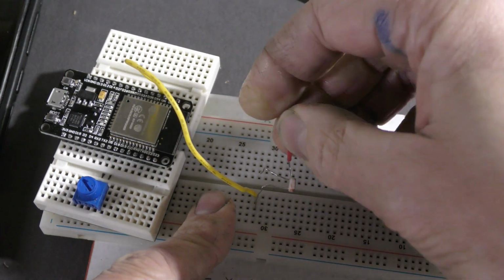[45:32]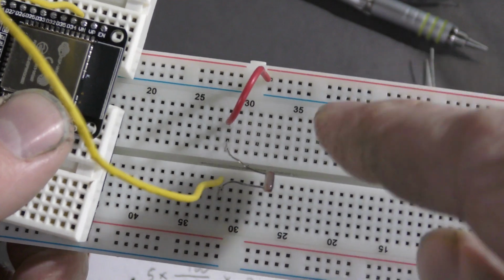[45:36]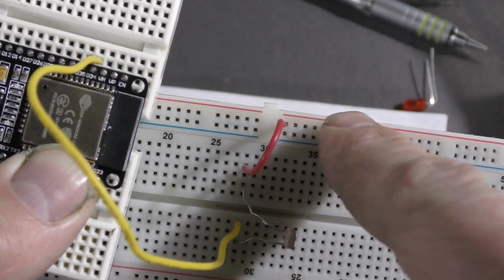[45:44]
So I got a red one for power. In this case, we're going to go 3 volts. So we're just going to plug that into our channel. Oh, and if you get the bigger breadboard, you see this big gap, this channel and this channel are not connected, by the way. So I'm starting this on the red on this end.
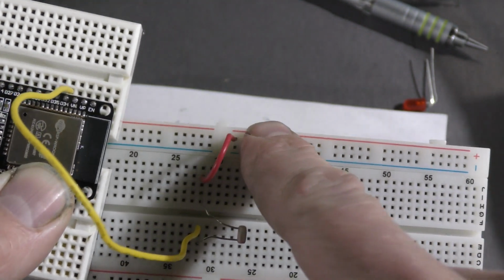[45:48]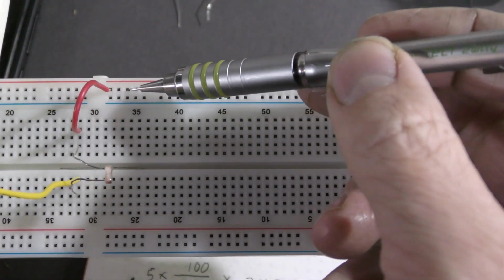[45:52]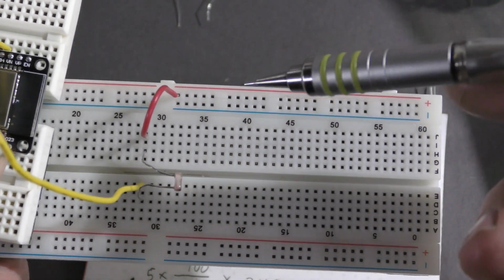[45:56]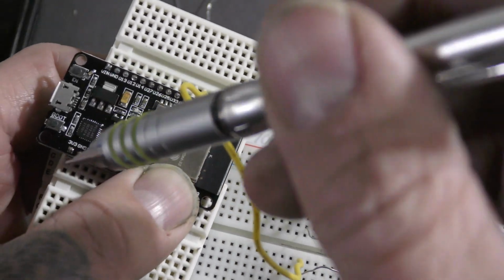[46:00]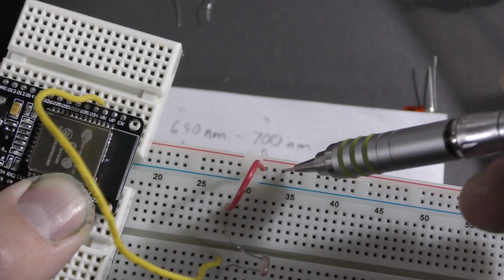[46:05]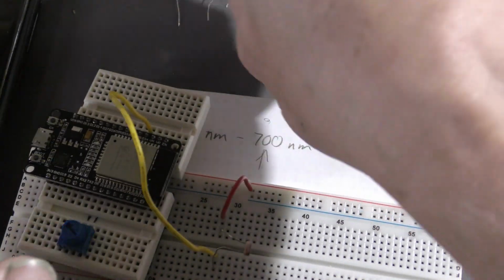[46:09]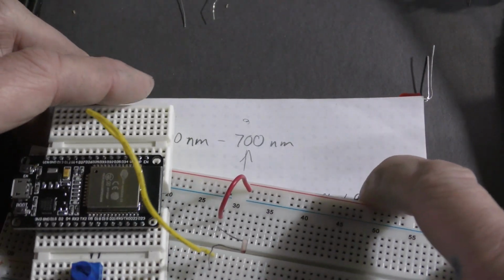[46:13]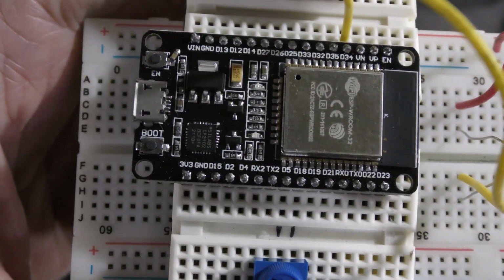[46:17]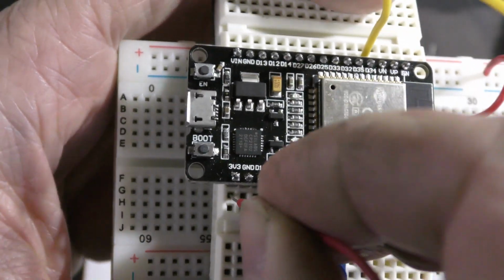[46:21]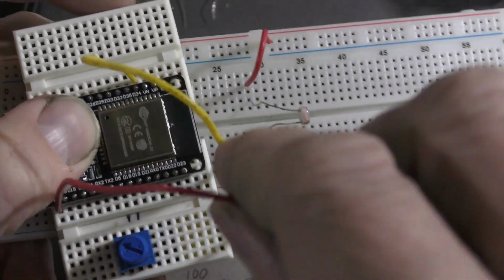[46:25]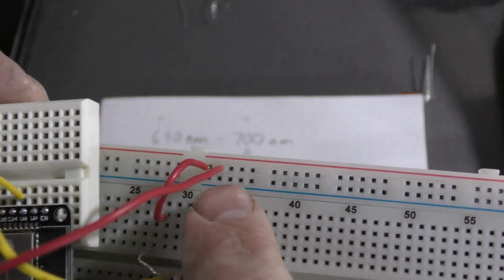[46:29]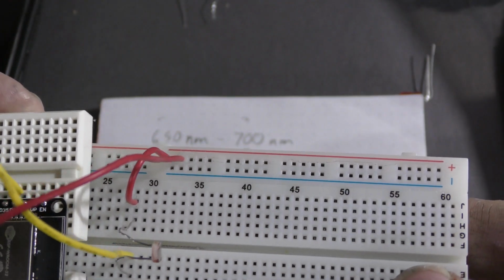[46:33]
And so now this whole row right here is going to be 3 volts. And I could plug as many things as I want into that 3 volts. In this case, I'm going to run 3 volts over here to this channel to get the whole row to be 3 volts. All right, don't worry, there's labels. So this first pin says 3.3 volts. Now I'm going to run that over to any one of these pins. Now the 3 volts is this whole row of red.
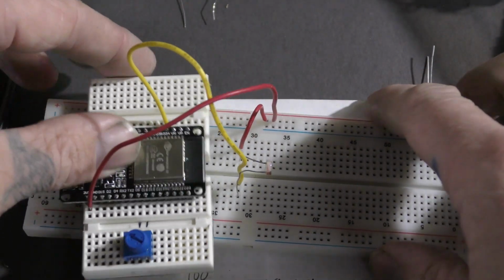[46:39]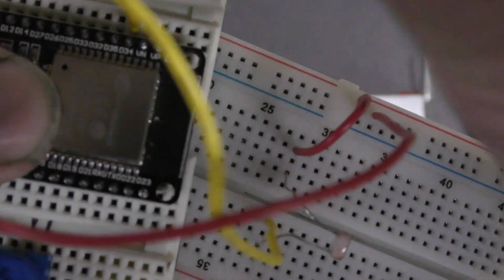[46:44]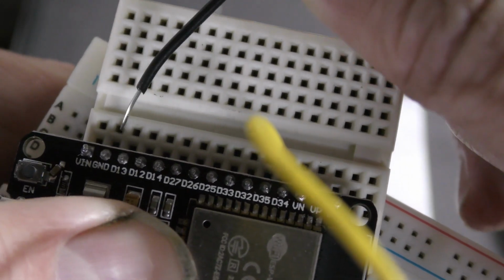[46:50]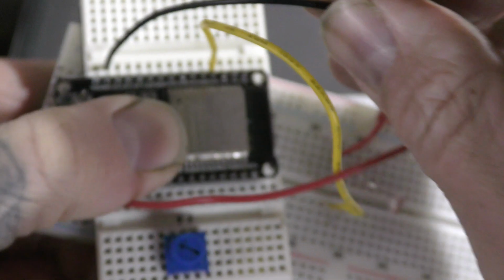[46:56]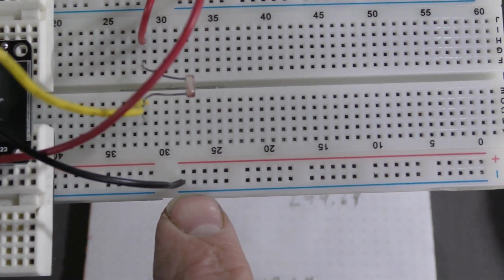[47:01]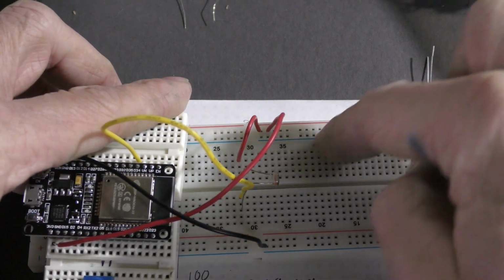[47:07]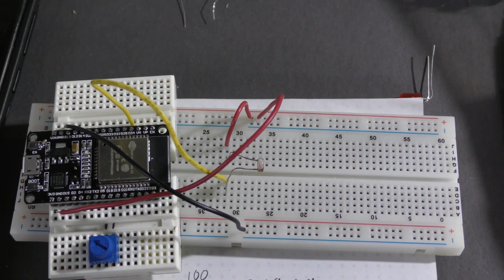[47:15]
Cool. I'm going to use this side for ground. All right, how do I do that? Well, I find ground. In this case, it's labeled GND, ground. You see that pin, that hole, and then over here, I'll plug it into any of the blue ones. Now this whole row is ground. So I think about this side being my positive side and this side being my negative side. Sweet. Still with me?
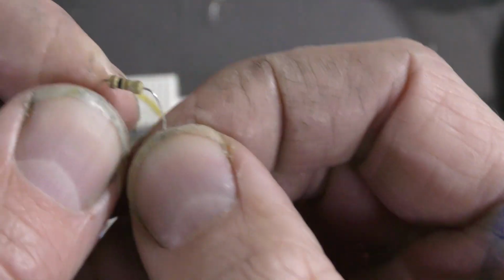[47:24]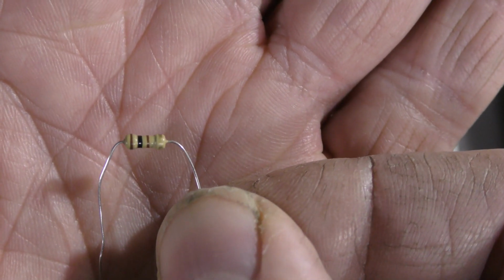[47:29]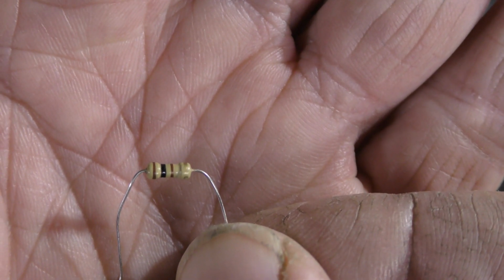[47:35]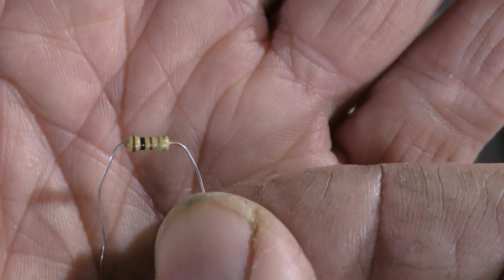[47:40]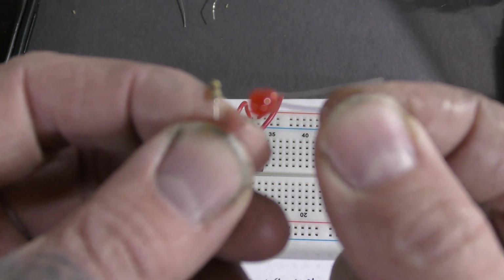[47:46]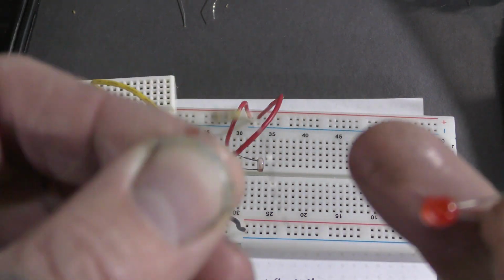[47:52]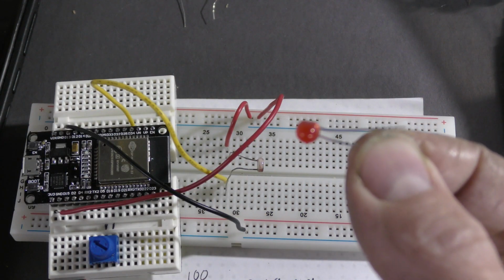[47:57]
Hopefully. Oh, I forgot a component. One more component you're going to need is a resistor. I would suggest just buying a whole pack of resistors. In this case we want the brown, black, brown. I believe this is 10 ohms. Brown, black, brown. This will make it so that this light doesn't blow out, because the amperage is just a little too high for 3 volts. So this little resistor protects this guy.
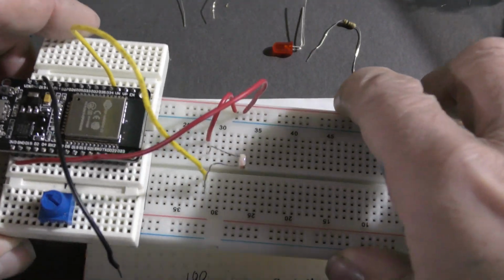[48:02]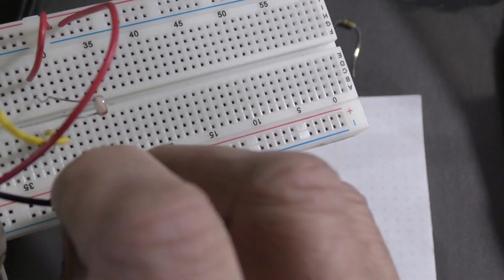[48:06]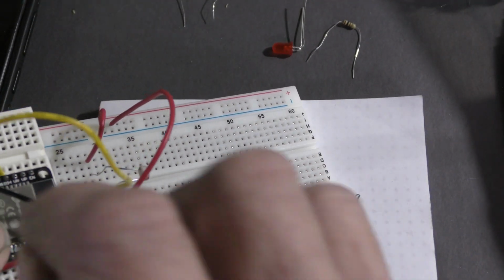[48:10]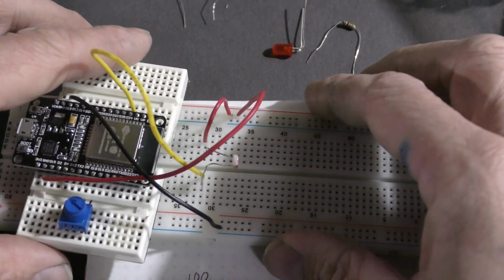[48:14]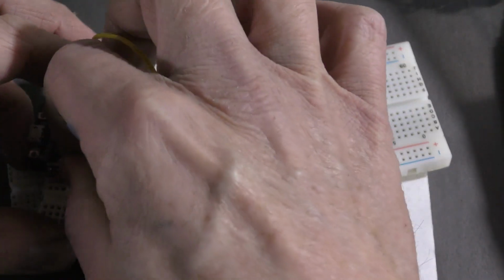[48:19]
Alright. Sorry I didn't add that to the list. I remember when we had Radio Shack, you could run back and forth to get new resistors, and I would do all these cool tutorials from other people. And I would always have to go right back to Radio Shack. They don't have that anymore, but it was my favorite store as a kid.
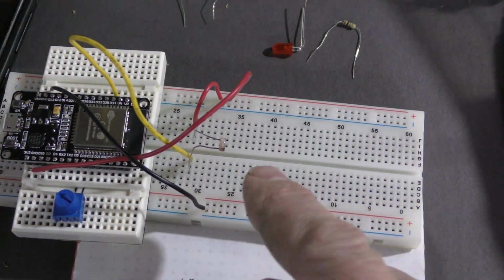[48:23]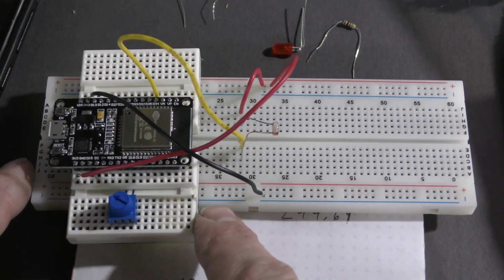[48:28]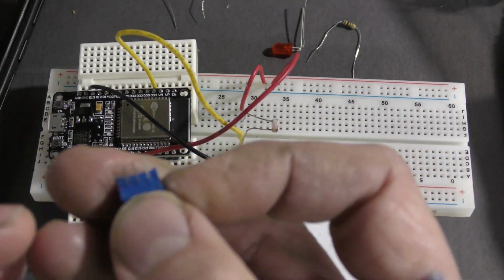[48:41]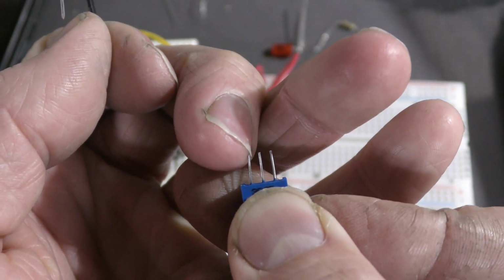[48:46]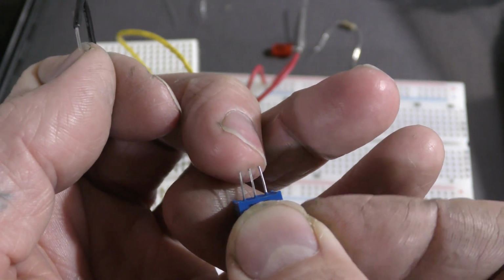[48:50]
Alright, so now we hook up the potentiometer. Okay? Alright. So a potentiometer kind of works like this. One prong, any prong on any side, doesn't matter. One prong is going to be ground, the other one's going to be power, and the middle one is going to be the variable. Alright.
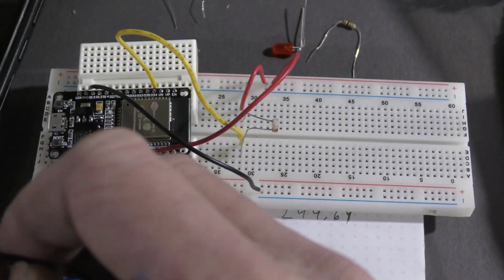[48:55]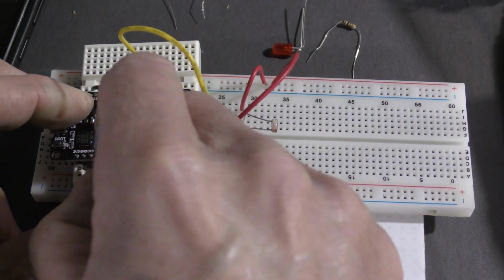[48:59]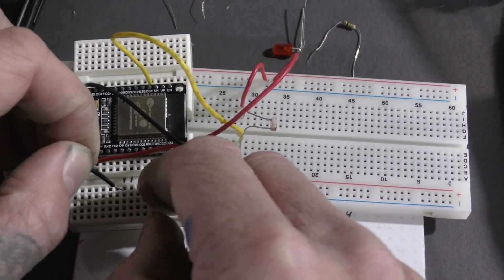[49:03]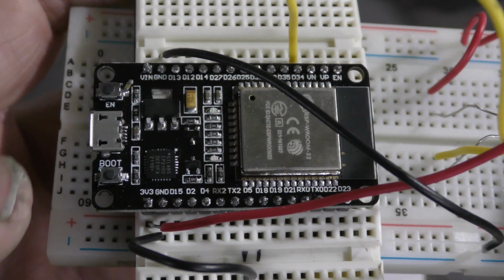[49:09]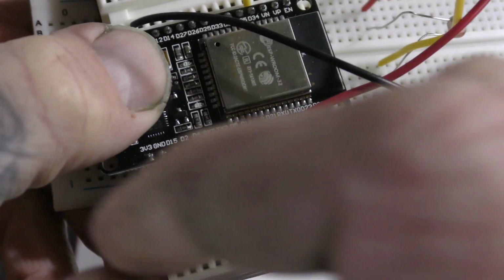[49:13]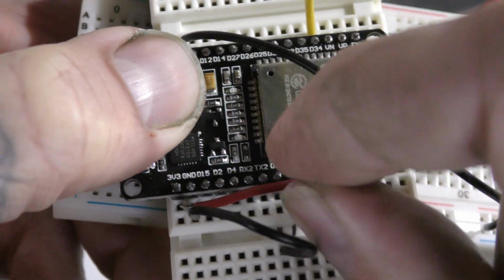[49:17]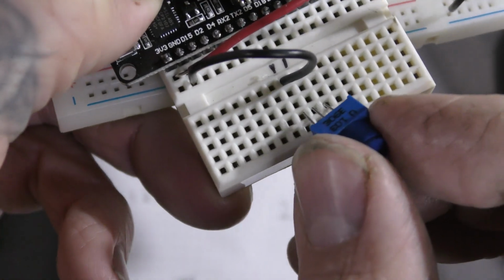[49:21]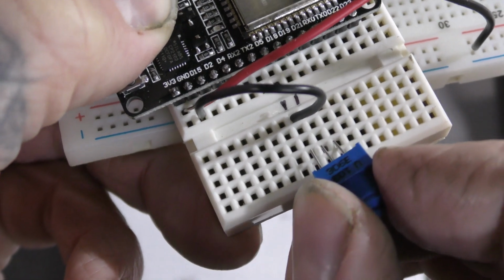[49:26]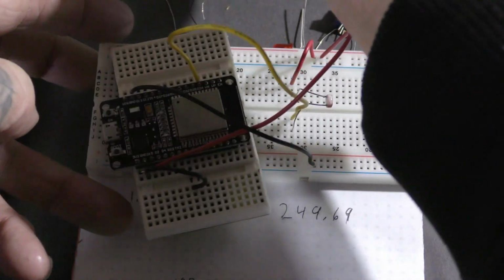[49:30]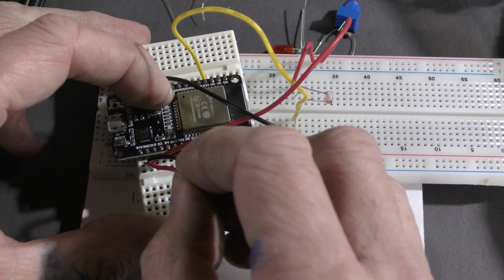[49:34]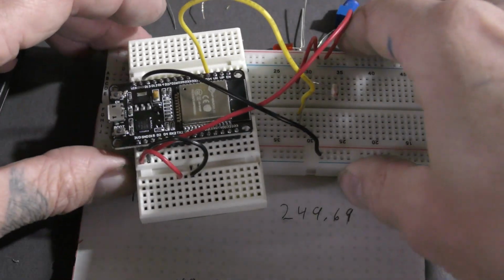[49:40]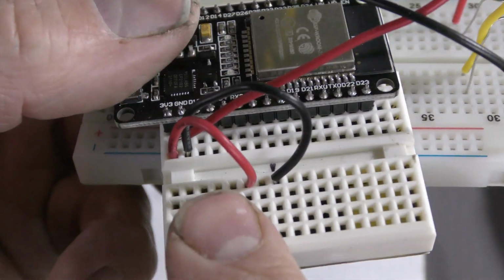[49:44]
So we just have to make sure that we hook this up to a ground. In this case, I use the GND on the other side. Okay, so that when I slide this in, one is going to be ground. The other side needs to be power. I see something on the other side there. Okay, good. Look at that. I hooked it to the 3 volts.
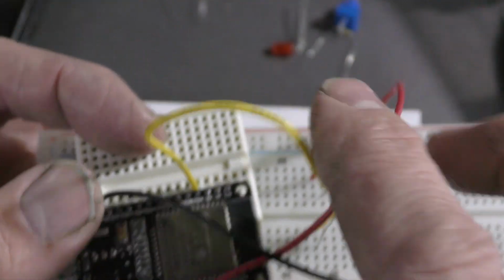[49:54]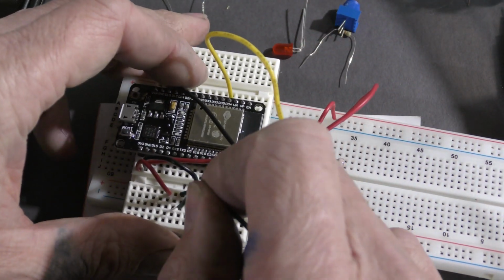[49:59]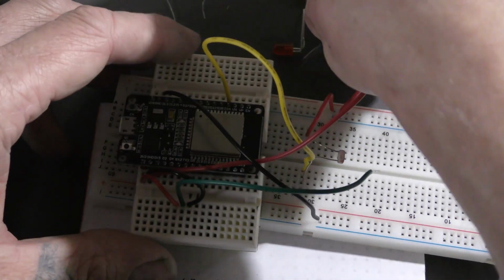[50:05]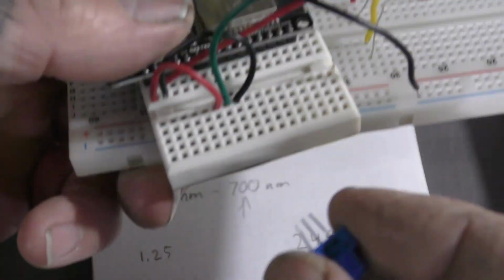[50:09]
So now I got a channel, black, red, and the middle one is going to be my variable. So that's going to be, in this case, green. Sweet. Now that I have my wires set, I can set that in there and have you easily understand how that works.
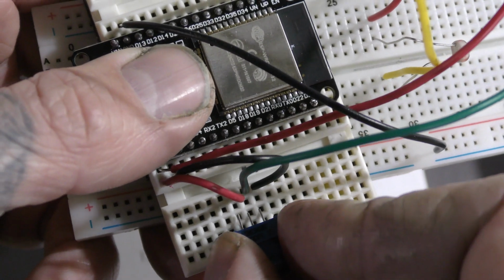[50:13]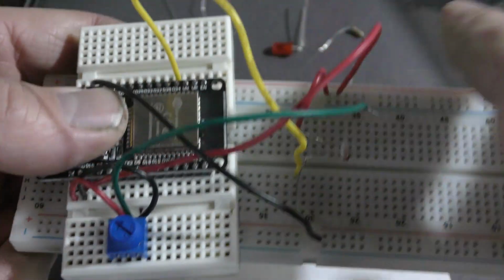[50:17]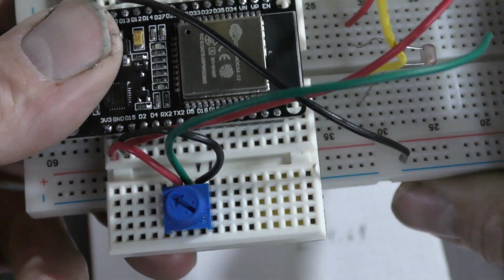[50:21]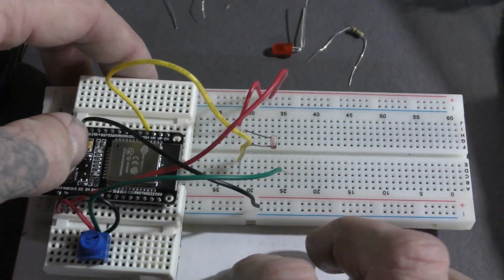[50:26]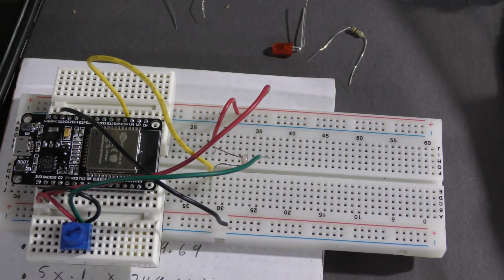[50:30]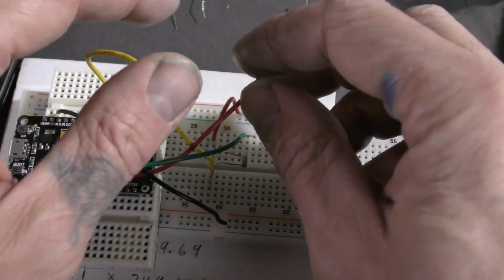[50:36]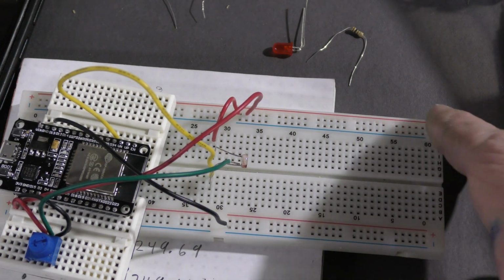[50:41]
You can see how confusing that gets sometimes, but it's very easy. As I turn this knob, I get a different variation of resistance. Kind of like how you change your settings on your electroforming bath. It has that knob too. How we change our amperage. All right, so that was the hard part, really, to be honest with you.
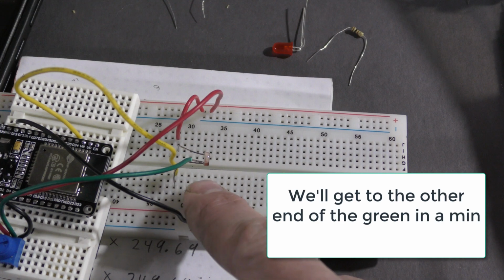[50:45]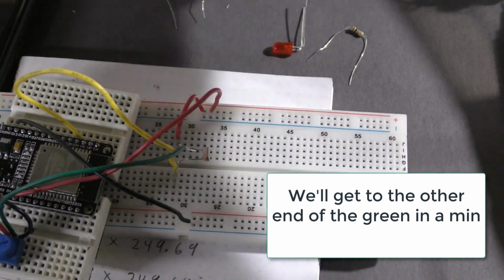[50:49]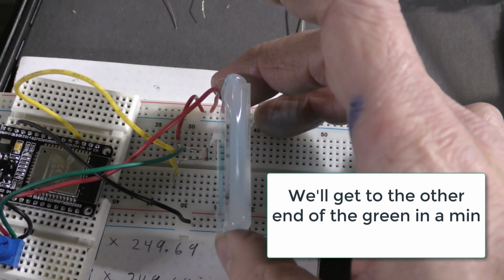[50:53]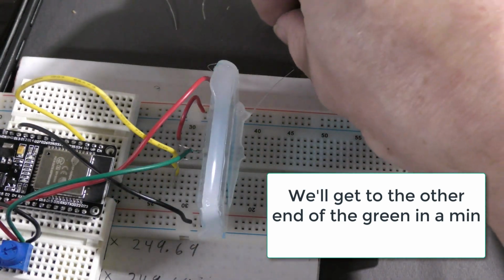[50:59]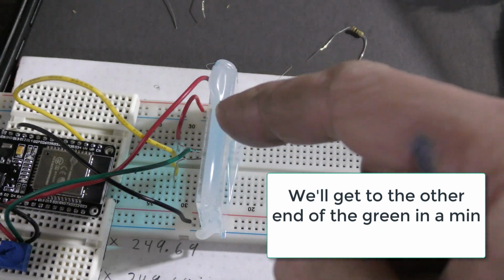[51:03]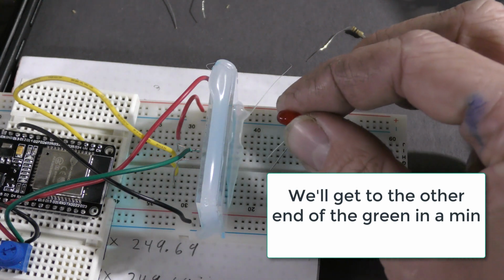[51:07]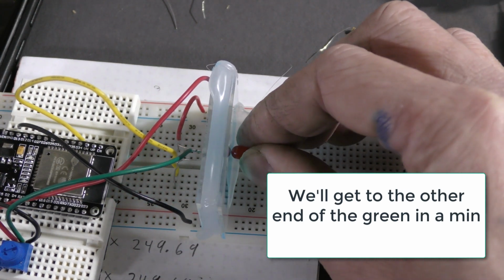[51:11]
What we just did is so now we have this photocell that's hooked up to a microprocessor, and what we're going to do is broadcast light through a known solution. So now we just need the light on the other side. Now what I do is, because this might change depending on who's making it and how many microscope slides you're using, you could say, well, I just need it to sort of touch.
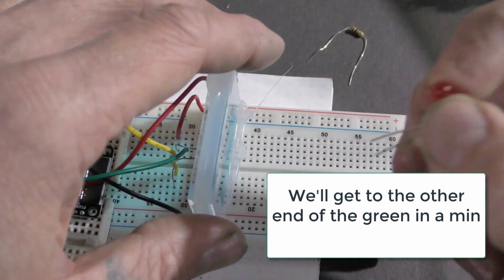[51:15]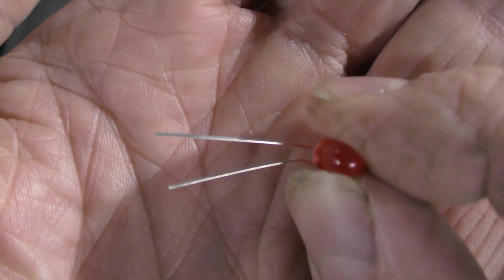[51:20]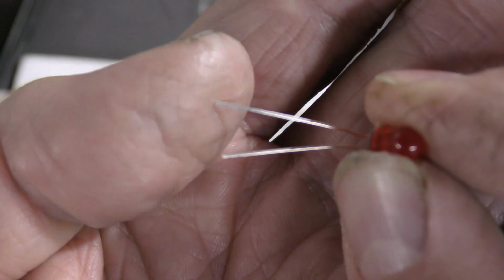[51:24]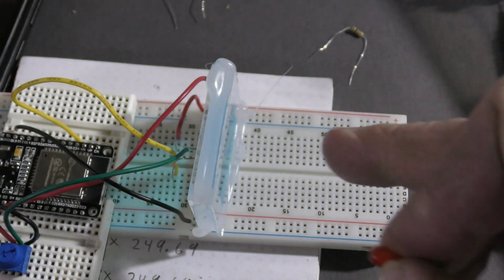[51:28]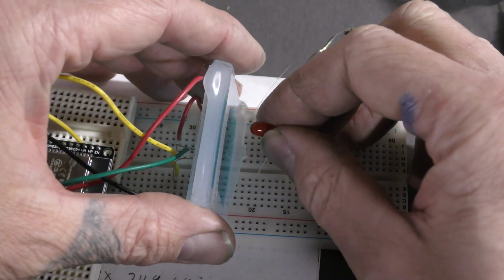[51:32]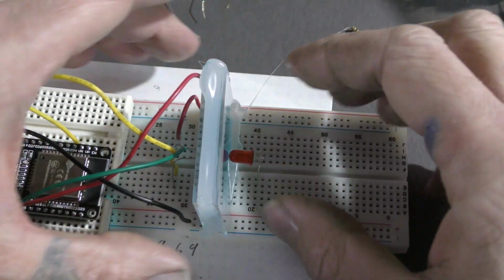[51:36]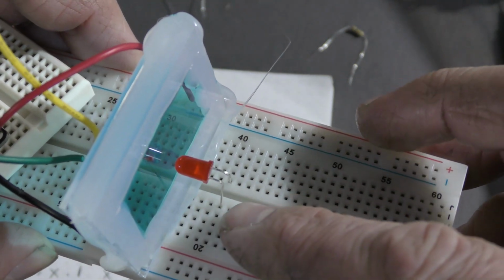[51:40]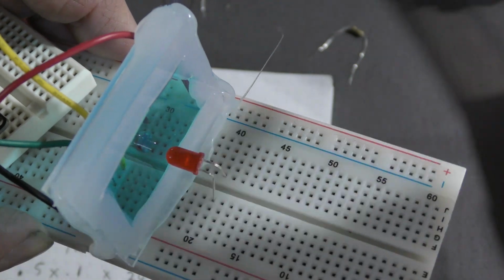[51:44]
And here is how an LED works. See how there's like a long leg and a short leg? The long leg is positive and the short leg is negative. So again, this is my positive, negative. I'm going to put the long leg like that. Okay, so I got long leg on one side, short leg on the other, and they're in relatively the same channel.
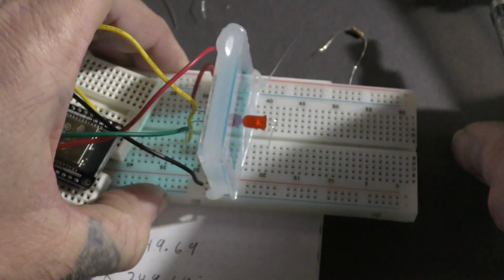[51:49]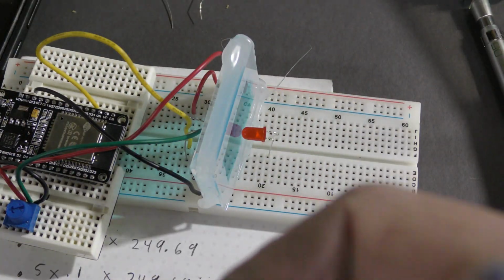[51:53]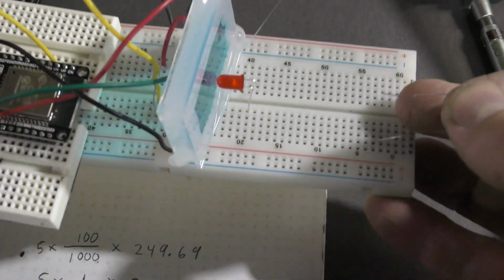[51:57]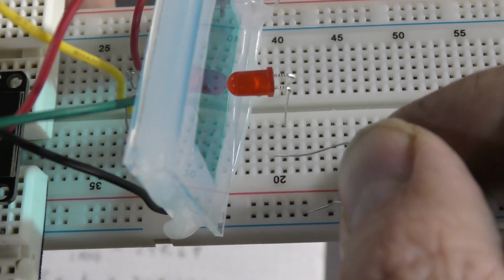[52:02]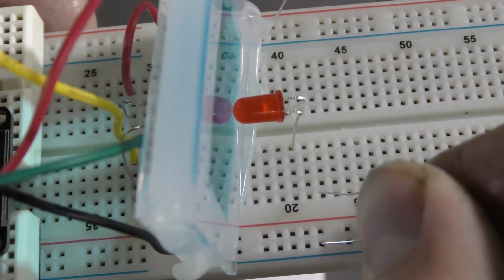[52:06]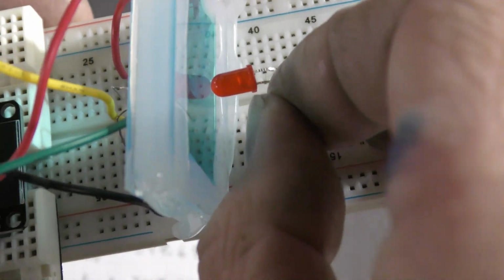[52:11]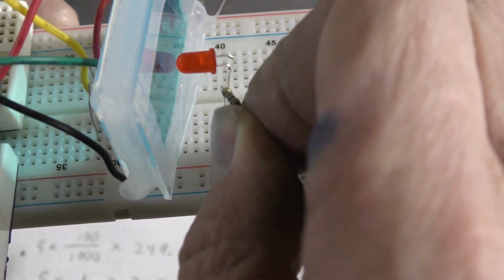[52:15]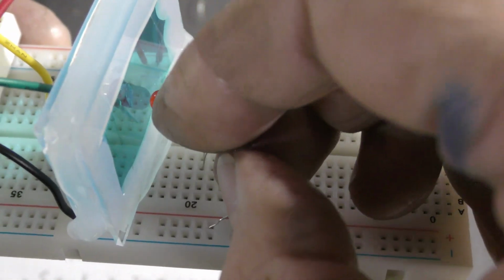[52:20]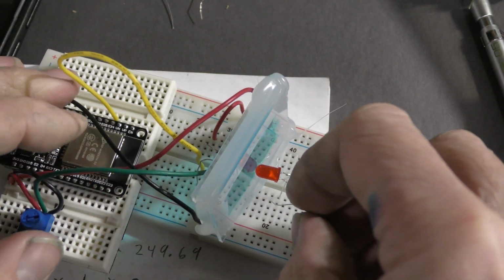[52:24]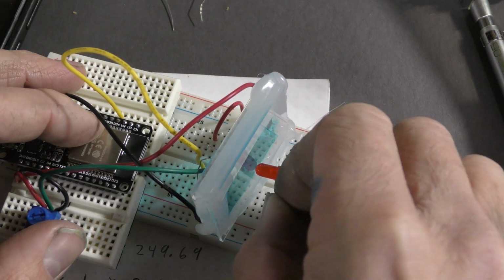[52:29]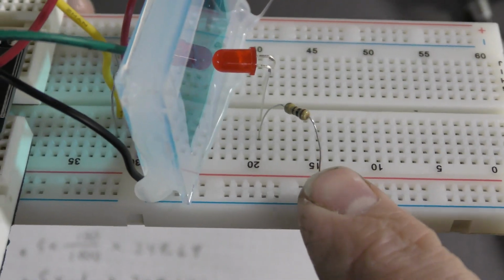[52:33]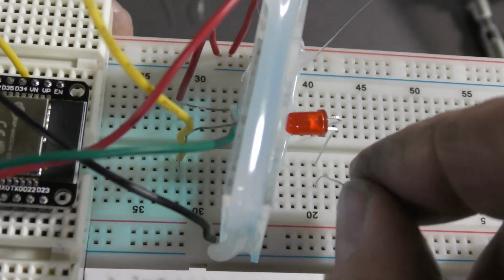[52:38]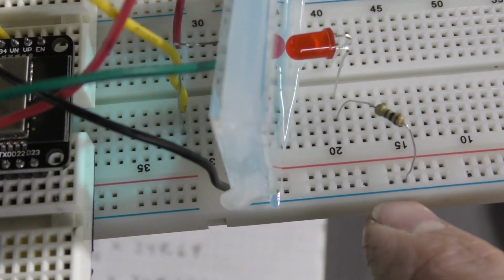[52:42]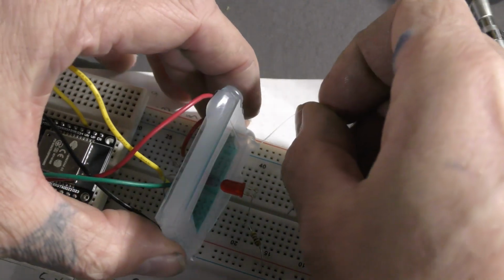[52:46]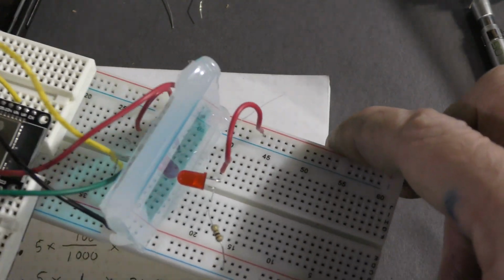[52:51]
All right, so I don't want the full amperage to go through this LED. The red LEDs are very, very snowflakey. They need a lot of protecting. Okay, so I do this. I do this. The makers of resistors don't use 22 gauge wire. Why? I don't know. So this is not 22 gauge wire. It fits kind of sus in there, but you can see it's in the same channel. And it goes over to negative, leaving my positive to be hooked up on the other side.
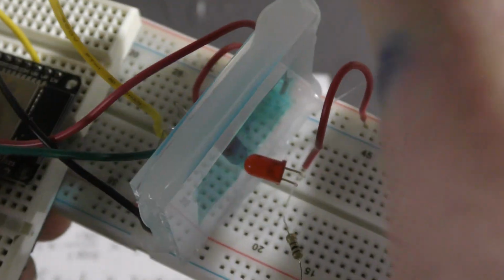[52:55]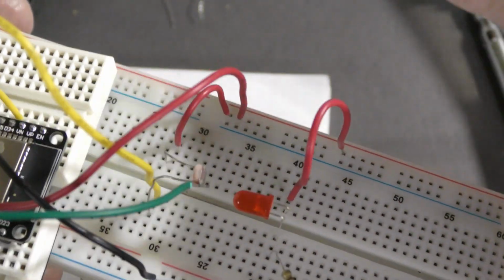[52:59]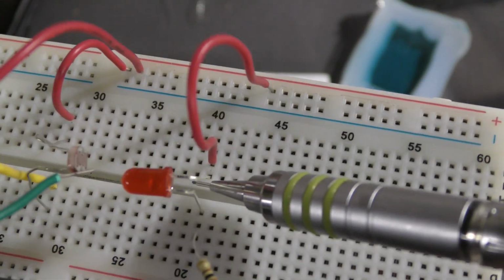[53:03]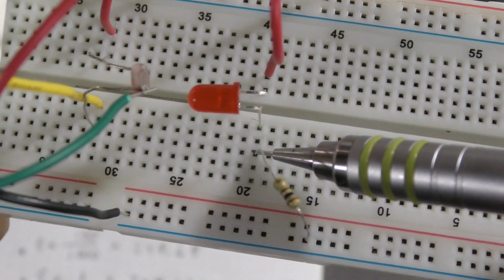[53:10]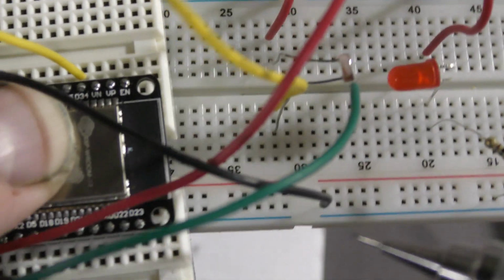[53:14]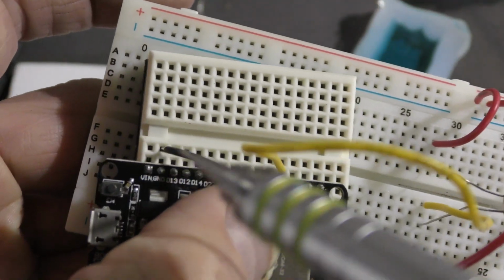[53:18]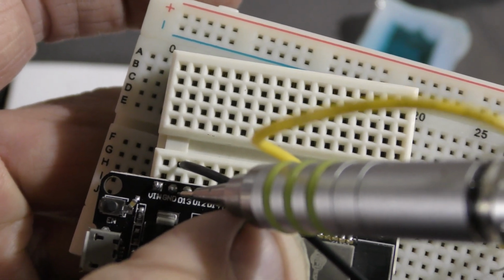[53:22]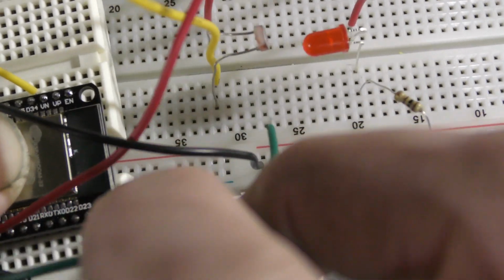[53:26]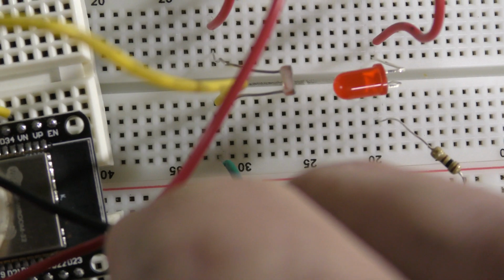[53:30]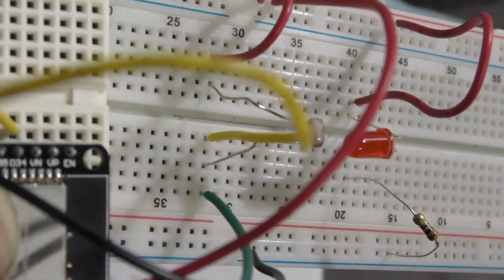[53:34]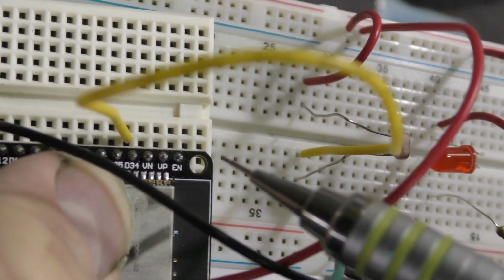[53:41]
So here I'll do a little zoom camera thing. Move this out of the way and kind of show you the whole thing. All right, we got a positive hooked up to the positive longer lead of the LED, the negative on the other side. Here's the resistor, and it's running over to the negative channel. We have a negative being ran over to the ground of the microprocessor, labeled GND. We have this green wire, which is the wire from the potentiometer. It's being plugged into the yellow wire, which is D34 on the microprocessor.
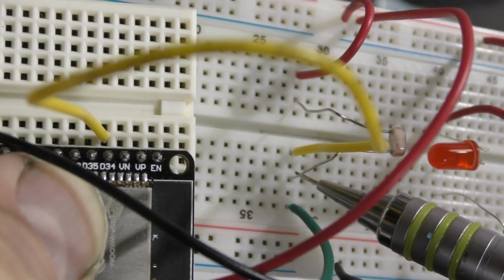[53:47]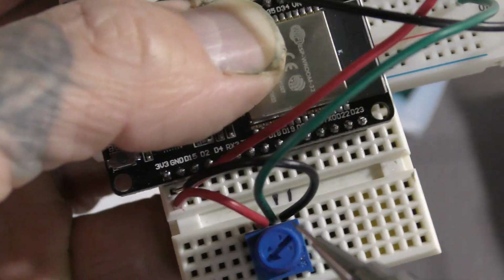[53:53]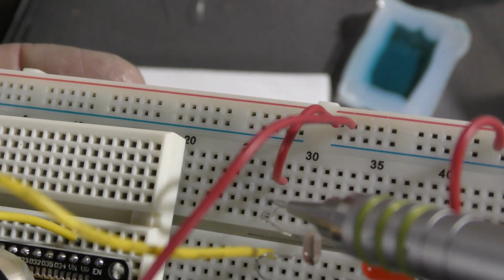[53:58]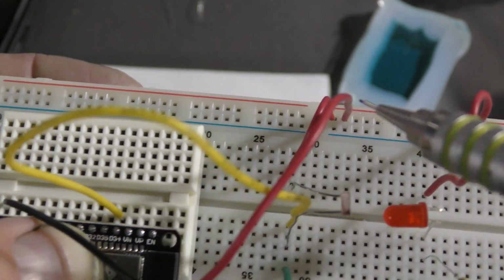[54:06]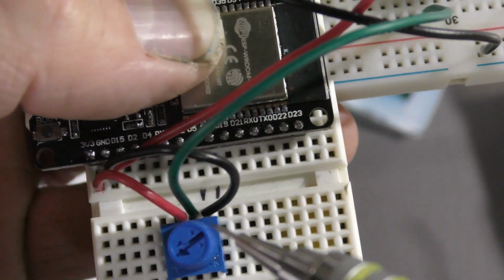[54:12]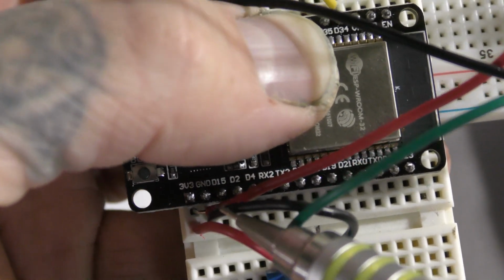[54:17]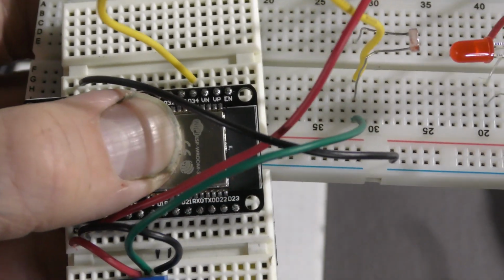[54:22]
One side of the photocell, and then the middle of the potentiometer. Boom. Cool. We got the 3 volts running from this channel to the photocell, and then we got this, which gives it 3 volts, running over to the microcontroller. This is the ground, and this is the positive, hooked again to 3 volts and ground. And we had this black wire that's running over to ground, in case I didn't cover that one.
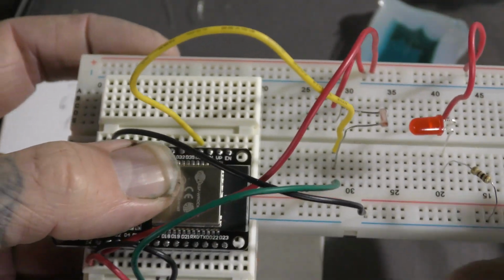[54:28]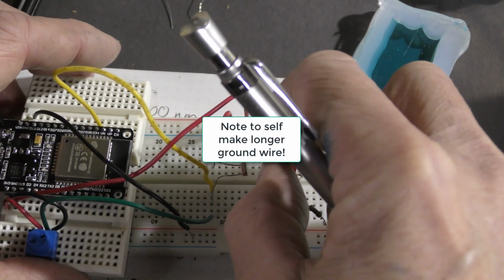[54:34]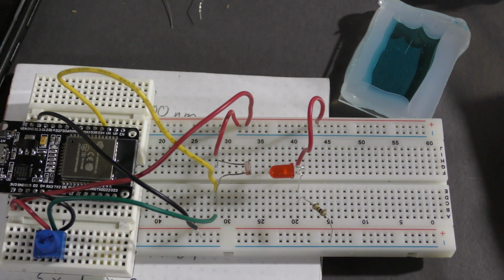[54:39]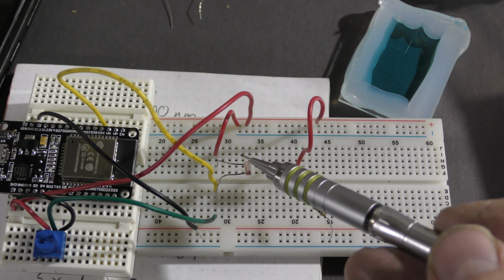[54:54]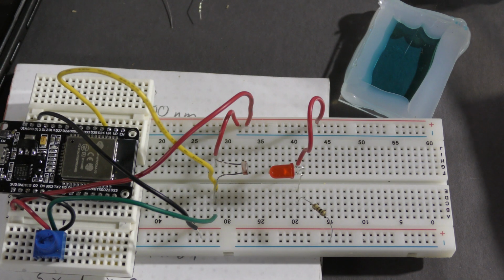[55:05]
I can also make a schematic for this, maybe. So that's all we need, really. A known value of light, a photocell. Now we need some data to push through it in order to measure how much light is going through. So at this point, on one side we have 100% of the light, and on this side is the variable of light that's transmitting through and being measured. And it doesn't matter what the numbers get pushed out here, because it's just a plot on a graph. That's the beauty of it. That is the absolute beauty of it.
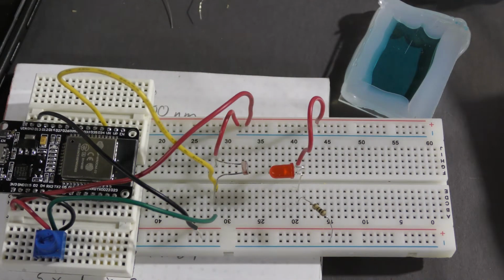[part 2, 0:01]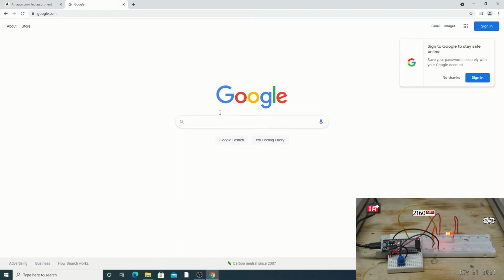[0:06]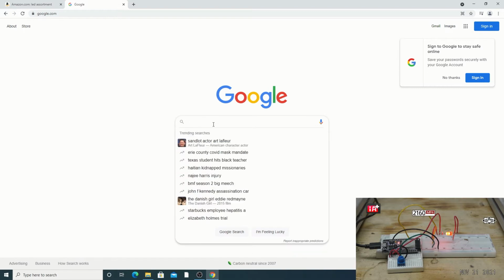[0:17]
All right, now the fun part, software. I'll let you know I've set myself up for quite a many failure on this machine. This is the worst computer in the world. It's Windows on a Mac. The USB is always suspect when that happens. So I picked this machine for a good reason. This is worst case scenario, so I'll show you how to get that working.
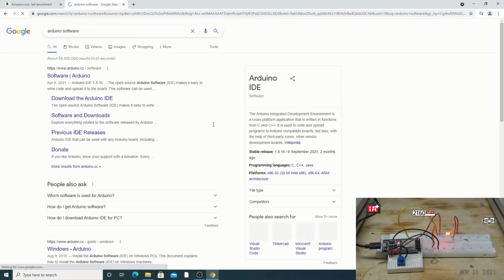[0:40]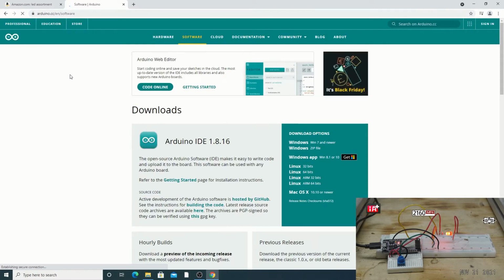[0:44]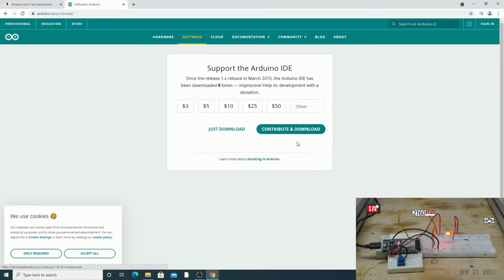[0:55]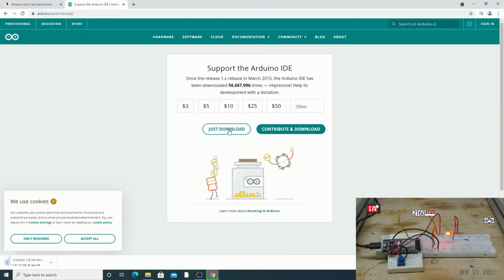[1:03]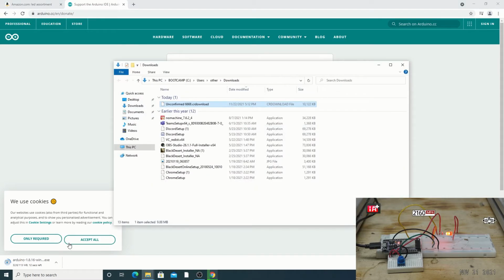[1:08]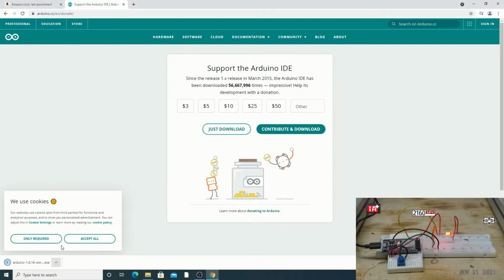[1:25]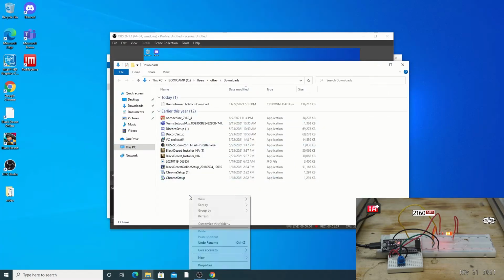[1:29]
First thing you're going to need is your Arduino software. Okay. So we want the Windows 7. Just download. Unless you want to, I would wait a few weeks after you play with it to understand the contribution level there. For those individuals that are doing this one and done, never touch it again. Or you could be like, whoa, what's this? What does this thing do? All right, so get that downloaded. There we go. So we double click on it and install it.
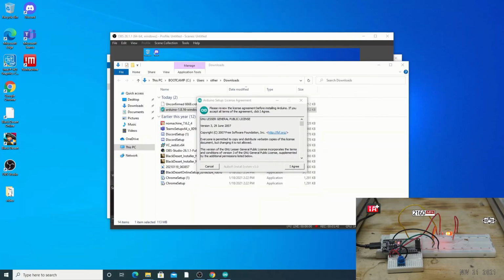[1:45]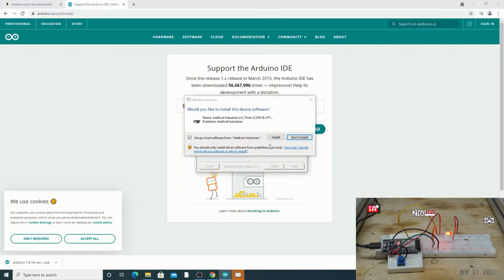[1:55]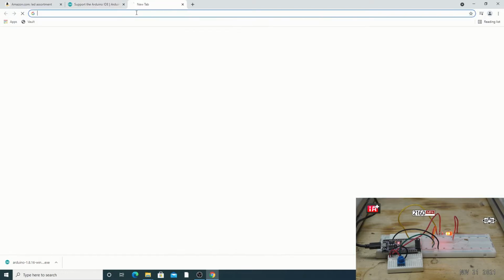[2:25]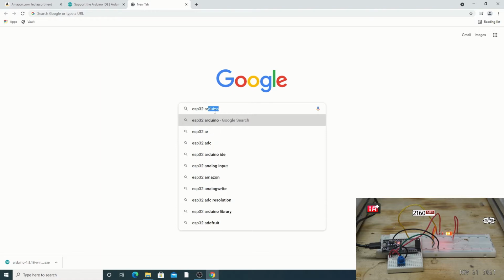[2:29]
All right, so it's going to come to this right here. Would you like to install this device software? Yes. Install. Install everything. Install. All right, sweet. Then close that out. All right, now we have to look up something. ESP32 Arduino.
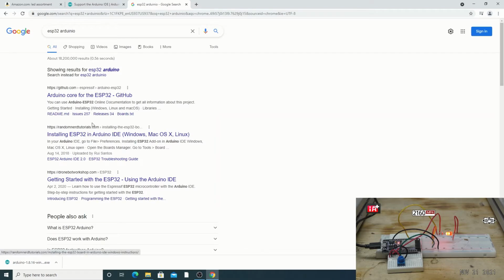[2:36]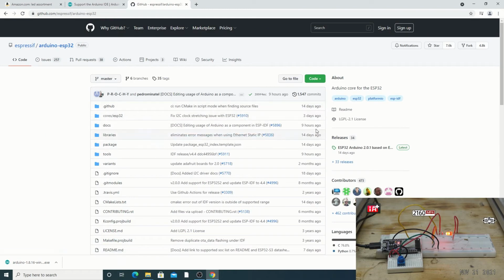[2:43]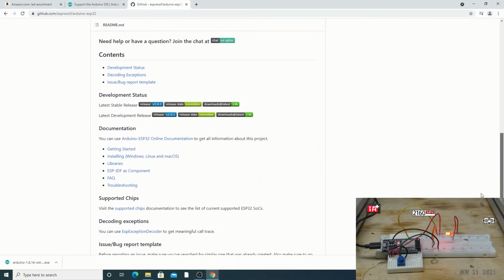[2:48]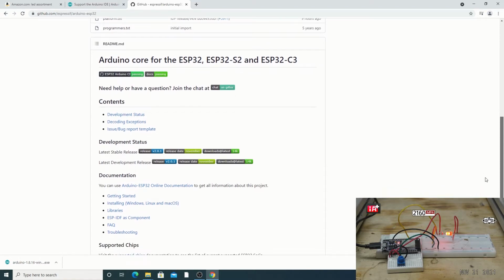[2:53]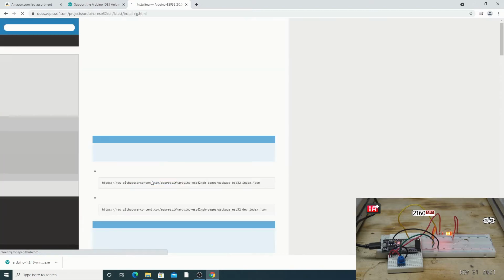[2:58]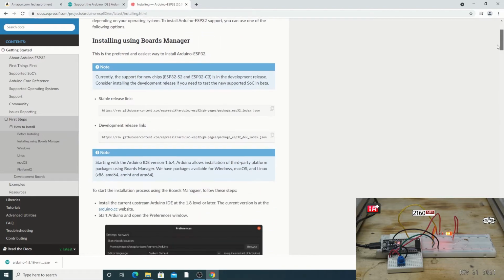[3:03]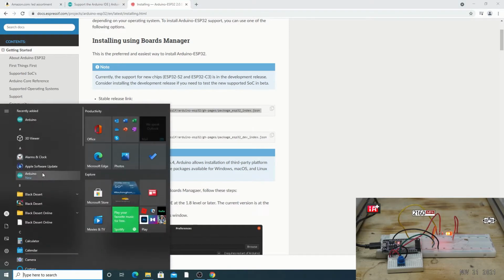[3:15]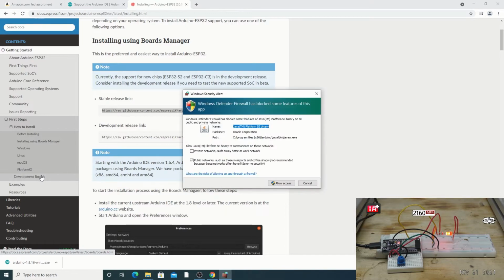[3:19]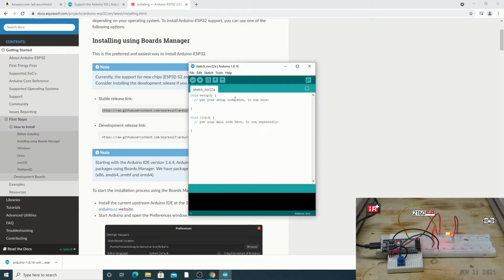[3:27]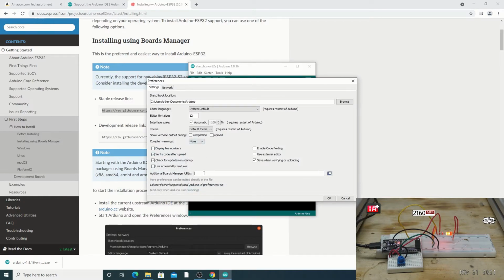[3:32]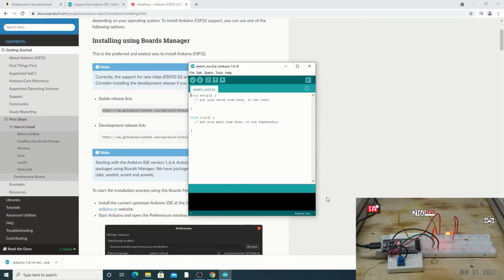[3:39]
All right, there's going to come to this ESP core for ESP32 at GitHub. You're going to look down and there is going to be installing. All right, so what you need is this stable release link. So you grab that and then you open up this new program called Arduino. Hit allow. All right, so that little string goes into preferences and you put additional boards and URLs. You paste it right here and hit OK.
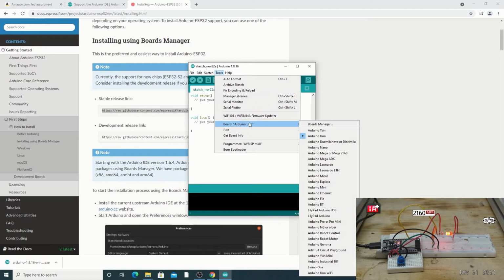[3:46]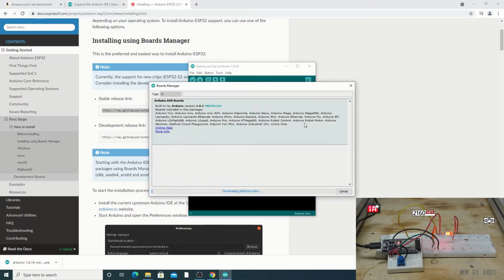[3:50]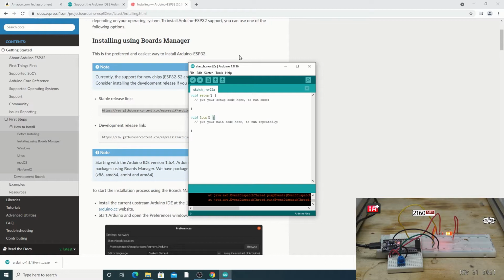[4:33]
Okay, with that in place, you can now go to Manage Libraries. Oh, actually, let's go to Boards first. Let's go to Boards and go to Boards Manager. And we're going to type in ESP32. Right there, that one pops up and we're going to install it. It's rather big. I'm probably going to cut this out of the video. You probably don't even hear me talking right now. All right, now that that's installed, we can close that out. And most likely, this will be grayed out for some reason.
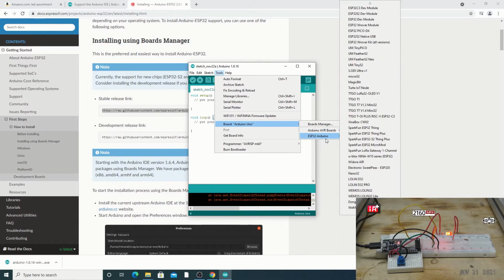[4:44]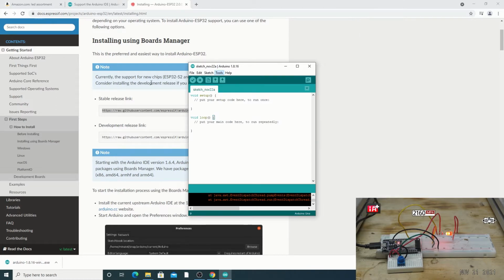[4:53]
So first we're going to go and pick our Arduino. It is the ESP32 dev module. Notice the port is still grayed out. Okay. Now that's because I said I set myself up for failure on this machine. And I chose this machine because that is a core indication or problem with some machines out there with any Arduino project is the fact that you can't get to the port. So I will show you how to fix that.
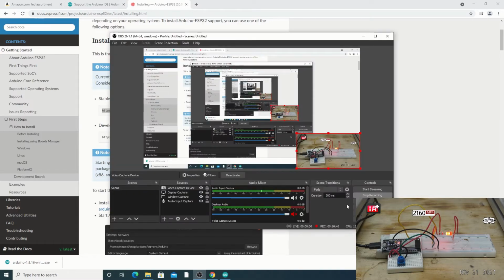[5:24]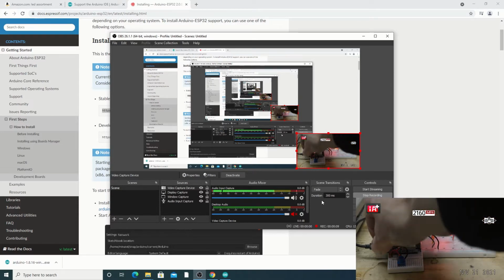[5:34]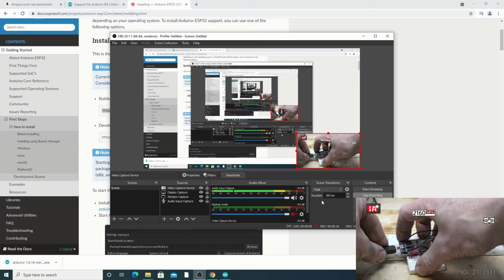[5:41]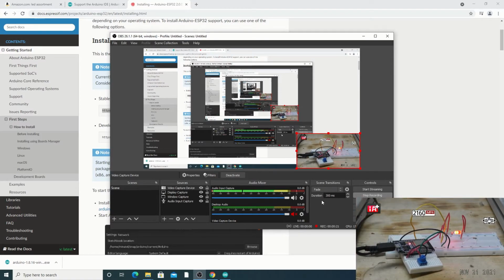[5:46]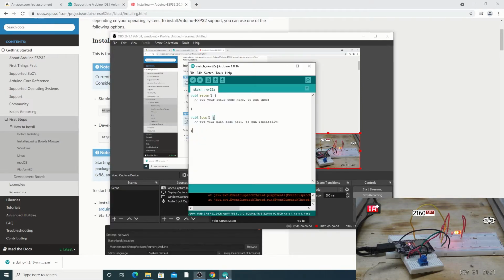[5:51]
All right, so the first thing we're going to do is plug my PlayStation 4 cable instead of this one. This one right here, I just randomly found, and I thought it'd be a great set myself up for failure type of deal. So here's my PlayStation 4. I heard a ding there. Did you hear that? It was like ding, and so when I heard the ding, now notice port lights up and the COM3 lights up.
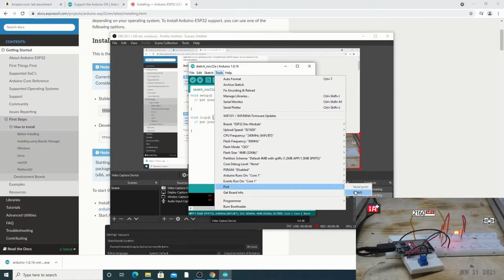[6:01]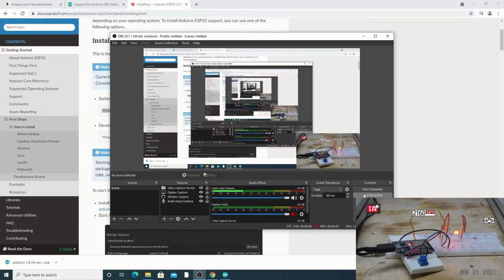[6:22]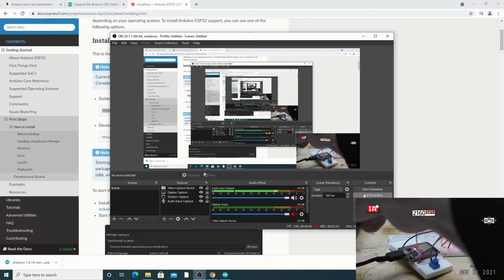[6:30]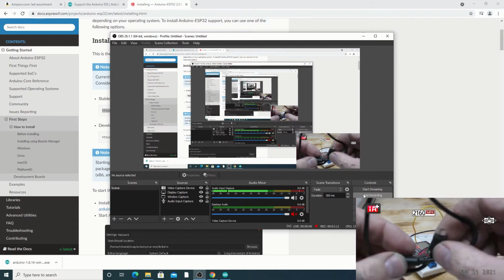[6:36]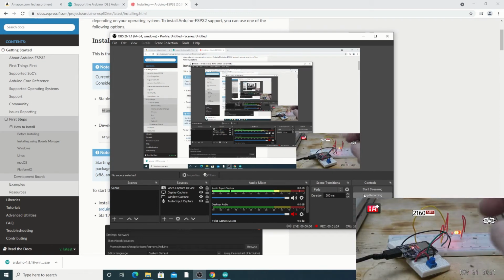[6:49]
So when I first did that a long time ago, it took me days realizing that it was just the wrong cable. So there is setting yourself up for failure, and there's how you fix it. You choose the right cable. Send and receive cable, not a charging cable. If you want to see what the other cable looked like, it was this little tiny thing. And we have these laying around all over the place. At least I do. It's this little tiny cord. Looks exactly the same. There's the USB micro or mini. And yep. Garbage.
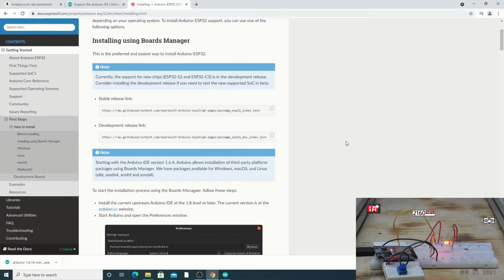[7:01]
Okay, recenter all of this good stuff on video. So now we have connection. And now I'm going to show you how to program it. I'm going to show you the code that I wrote for it, and how to augment the code a little bit in case you want to play. That's going to be in this next part.
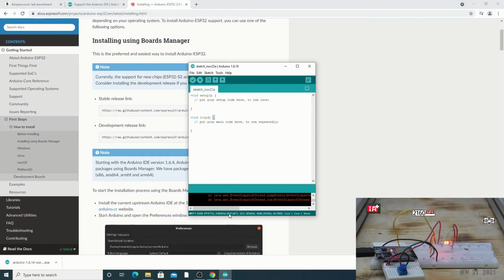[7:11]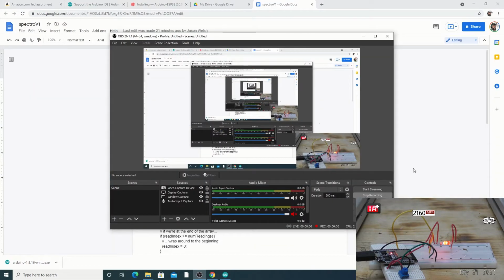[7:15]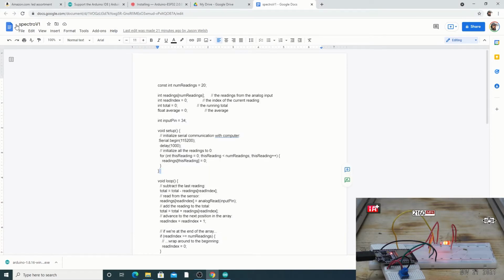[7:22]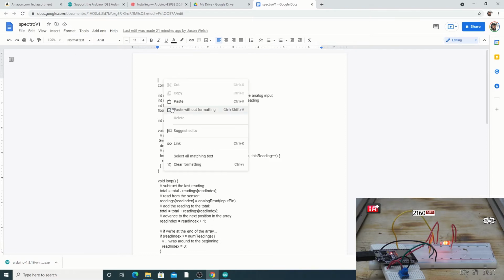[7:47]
All right, now we're going to look at the code. I'm going to share the code via a Google Doc. It's labeled V1. So what's going to happen is if there's a version 2, a version 3, you can just get that along with the additions. If you ever want an older version, you can just go to see version history and you can get older versions that way. And maybe I'll put that at the top too, like that. All right, cool. So now that'll change along with the title and match.
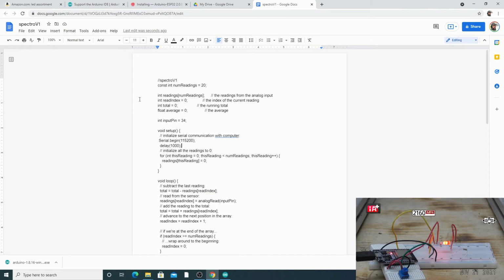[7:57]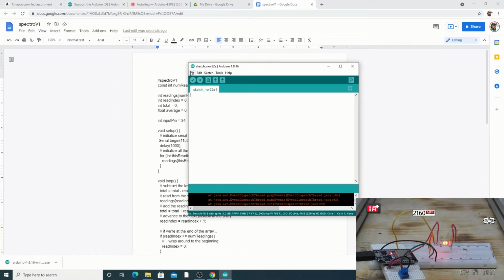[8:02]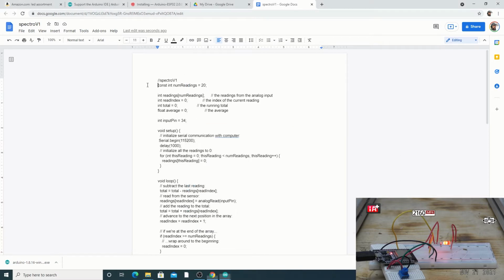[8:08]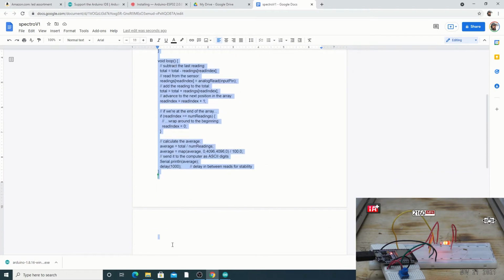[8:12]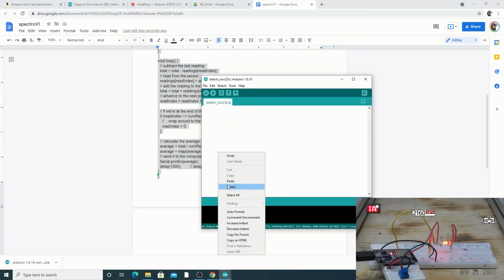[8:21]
All right, so let's go through this code. First off, in Arduino, we just go File, New. And you can just blank all this out, delete it. Then go back to the Google Doc and copy everything. Make sure that you go all the way down. Copy it. Go over to your blank Arduino sketch and paste it. Yeah, there we go.
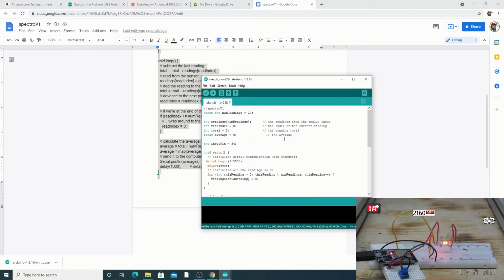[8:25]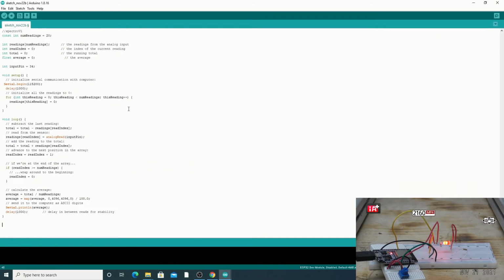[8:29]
All right, let's go over things that this does and what you can change and what you can't. First off, this reads something 20 times. You could change this number to a different number of readings, but in this case, I would like to sample 20 times. That happens very quickly, within a matter of seconds, so you don't even realize that it's doing it 20 times. Then it's going to use that 20 down here in this calculation. It's going to loop it. The above part is things that happen when it first starts up, and then it'll go into a loop and forever be in a loop.
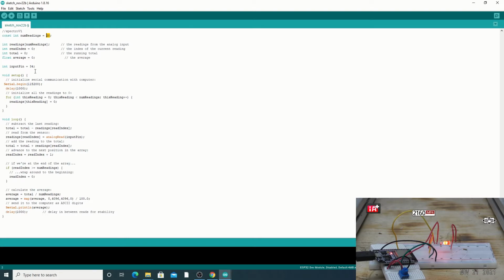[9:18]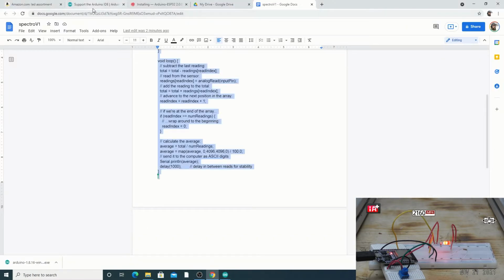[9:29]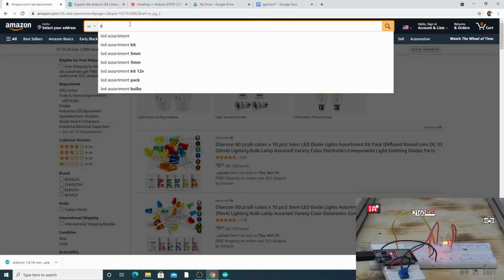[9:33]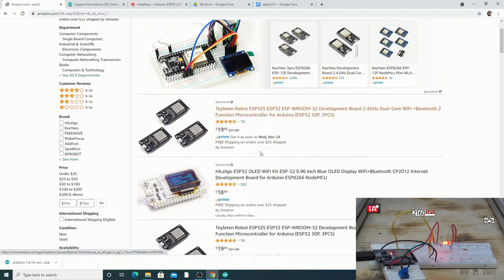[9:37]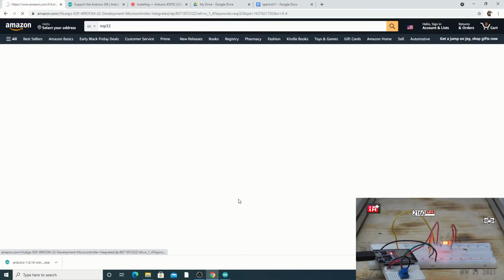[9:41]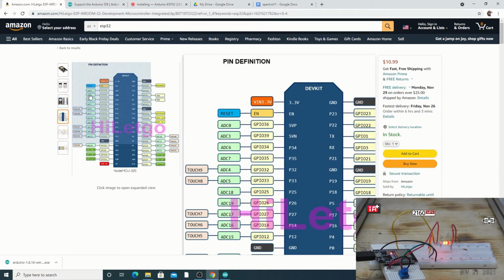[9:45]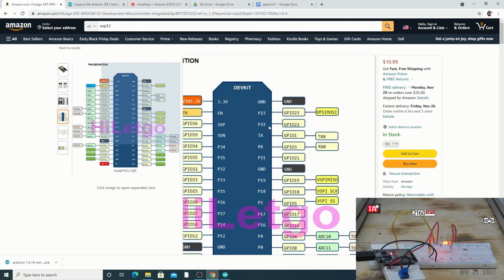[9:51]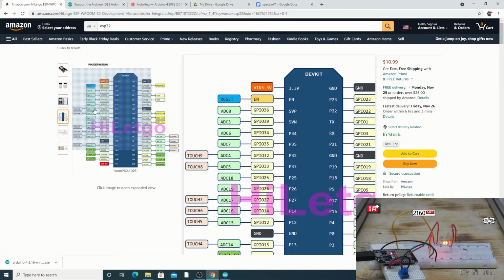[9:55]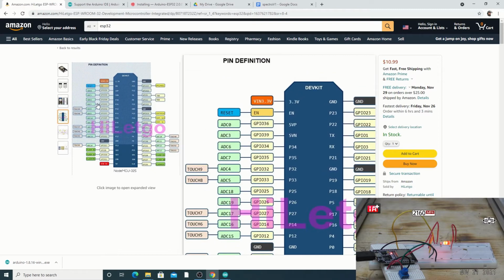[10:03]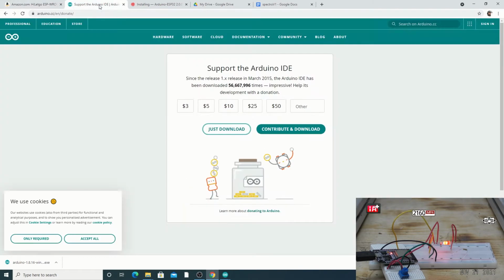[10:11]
Things that you could change up above are the number of readings, if you want to shorten that and play around with it. The input pin can change. Let's say, for example, you bought the ESP32. I'll click on a random one. Hopefully it has a pinout. Yes, it does. So where it says GPIO34, it's right around this area. I can't mouse over here, but maybe I wanted to use 35 instead. I could, and that is what that number is right here.
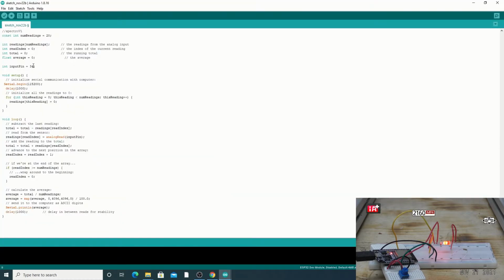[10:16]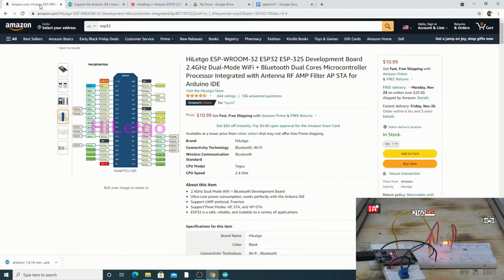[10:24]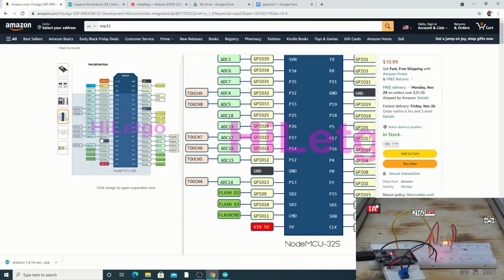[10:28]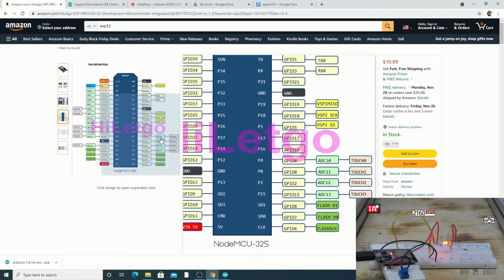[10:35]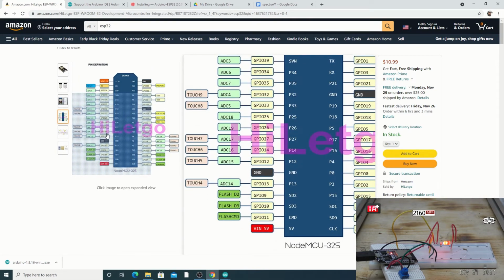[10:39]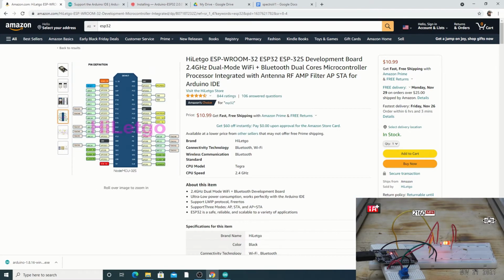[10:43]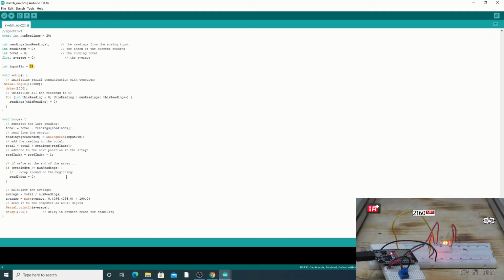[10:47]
This is the pin of the ESP32. Right now I'm using 34, but there are a ton of them on that. You can see them all the way from 36 down to 12. All of these green ones can work, and these are the numbers you would choose if you wanted to use the green ones. The other part is the speed at which I'm reading it. I wouldn't change that. That's why I picked the ESP32, because it can handle that 20 times sampling and then some. This could go up to probably 1,000 and it would still handle that. I just slowed it down to 1,000 so the window can keep up with the readings and your mind can keep up with the readings.
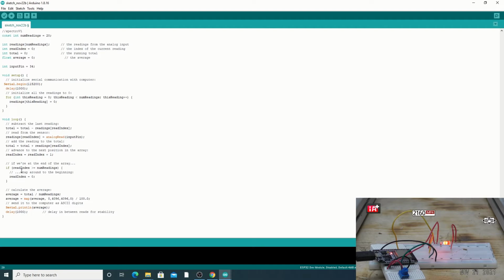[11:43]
This is important. This is basically setting everything to 0 anytime it starts up. So the loop happens like this. It says total equals the total minus the readings. The reading index is 0 to start out with. It waits until 20, and then it does its calculation. It uses an array to do this. This stuff I would not mess with at all. It would not be advisable. So down below, here it's taking the average. It's making an average based upon the total divided by the number of readings.
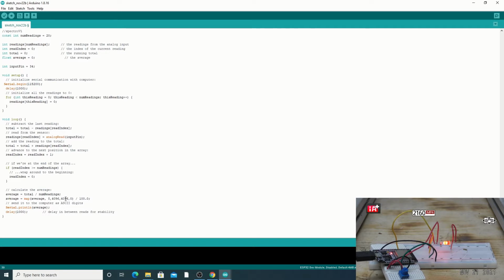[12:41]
Then I have to remap this back, because right now it's mapped between 4096 and 0. It goes backwards with the reading. In order to be able to chart this stuff, I can't have a chartable index of 4096. It wouldn't be really easy to chart. It doesn't really matter what number spits out as long as it's chartable. So it's backwards from that. If you ever want to play around with it, just switch these two numbers and see what it does. Put 0 here and 4096 here, and you'll see exactly what I mean. I would leave it divided by 100. It allows this average to float instead of being a whole number. And if you are really old and have a hard time understanding things at a very fast pace, you can change this to maybe 5,000. That will slow the feed down.
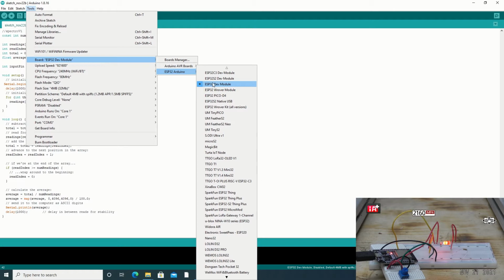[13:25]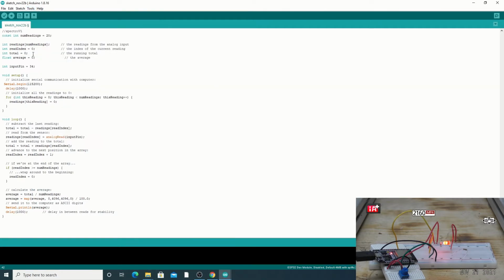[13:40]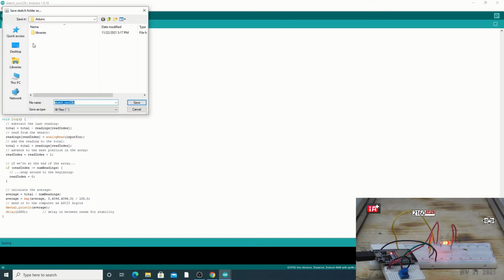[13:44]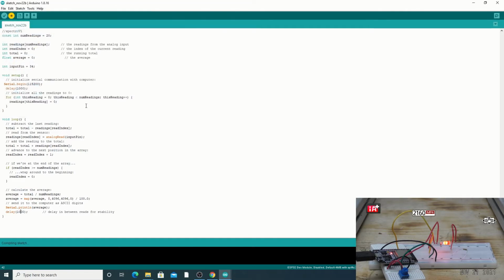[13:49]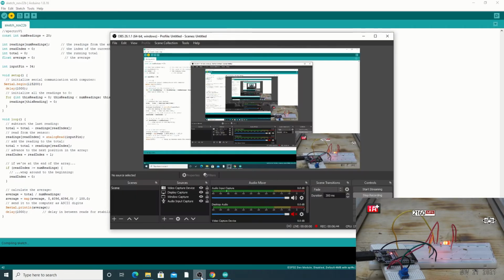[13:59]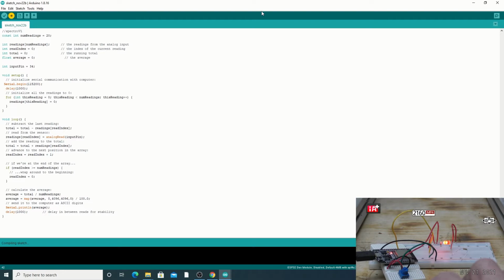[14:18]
So what we're going to do is write this little code onto port COM3. Remember, I chose the ESP Arduino ESP Dev 32 module. If you bought something else, there's a list, but if you are at all lost, just use this one. All right, cool. This is the right button. It wants me to save it somewhere. Save it to my desktop, even though I don't want to do that. Over here in the ESP cam, if it's still going, you're not going to see very much as you translate it over. You might see that light blink. Hard resetting via RTS pin. So now it's written on there. When you see the hard resetting via RTS pin, it's good to go.
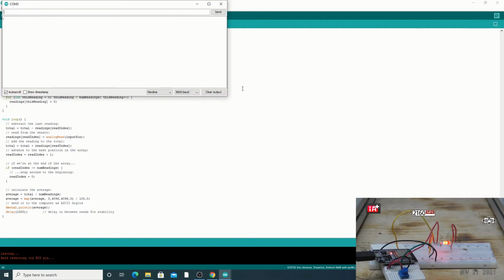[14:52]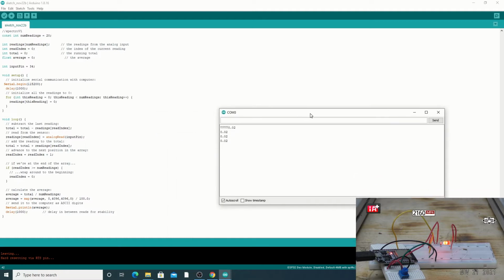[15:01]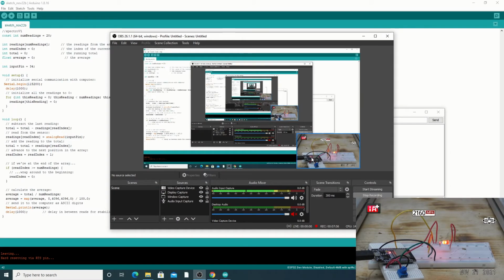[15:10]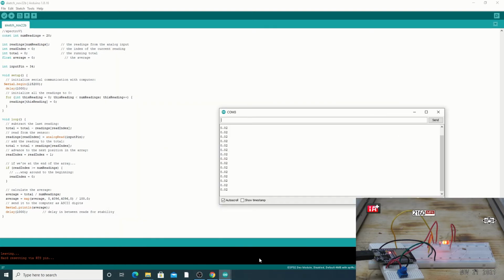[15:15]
So we can look at the serial monitor and then switch this baud to 115K. There we go. We have numbers. Yay. So what this does right here, let me make sure that this is all going correctly in the capture window. Good. You can see my hand here. All right, and let's go back to the serial monitor. So let's pretend for a second I just changed this. I rotate it this way.
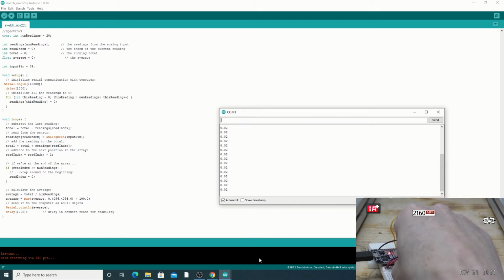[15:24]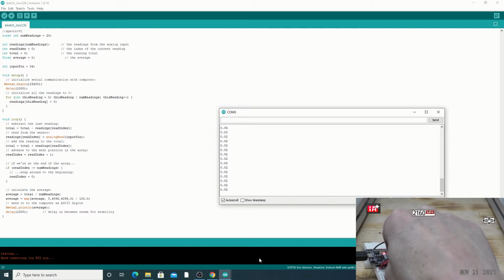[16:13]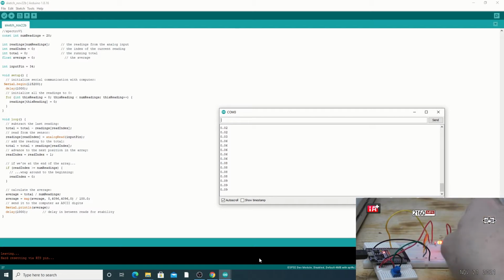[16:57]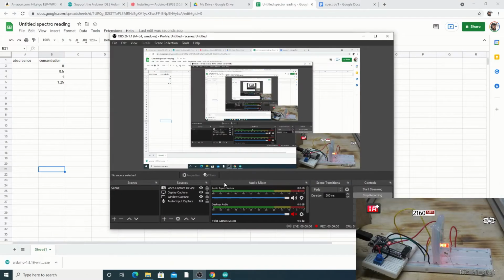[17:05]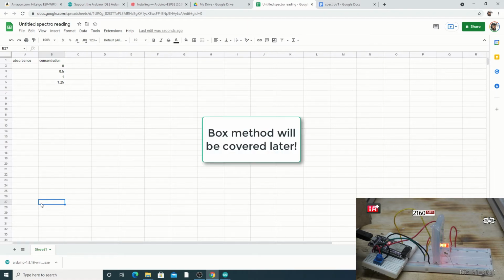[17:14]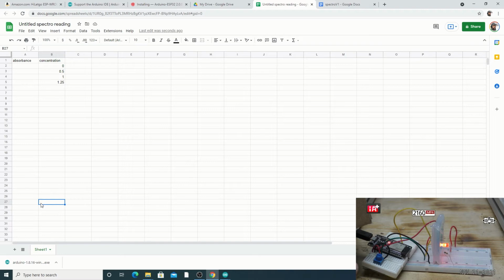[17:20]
So I've got to go get my samples. All right, so just know that if you do choose the box method, you would have to have this switch outside the box when you went to zero it out. I am not at all upset with the results based upon it never being covered up. And it's because I'm in an infrared zone, okay? So the infrared light coming off that LED is way different than the ambient light around me. There's barely any infrared light around where I'm at right now, so it can't get too botched up, okay? So just know that if you do cover it up, you would have to have this potentiometer on the outside of the box to make the adjustments like I'm going to be showing you.
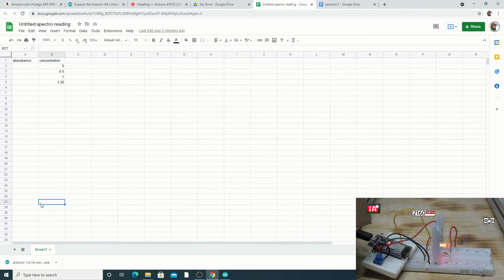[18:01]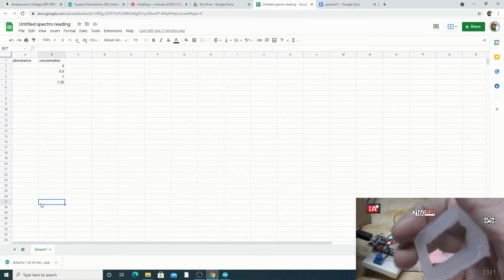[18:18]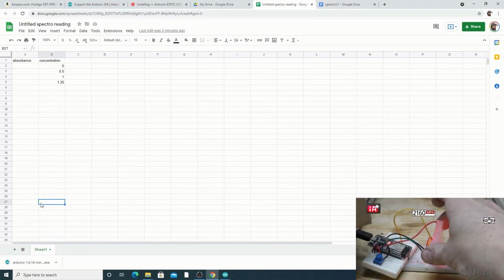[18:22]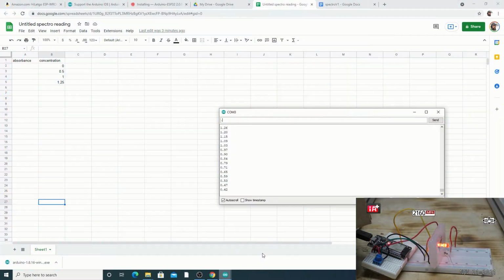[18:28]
I am totally happy with the curve it's making right now, and I'll show you how to first zero it out and then plot it out. Okay, so right now I would have to start out with distilled water, and I need to zero out the unit. So I'll put the distilled water in it. Then we're going to go over to our plot or our serial window, and we're going to let it settle. And you see how it just turned to 0.02. 0.02 is 0 on this unit, okay? We'll never get down to 0 because of the average, unfortunately.
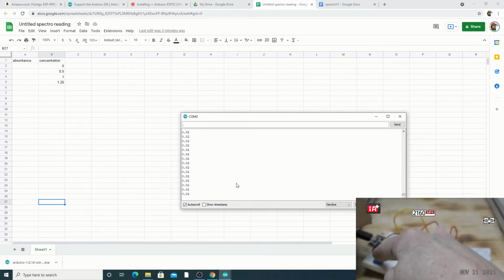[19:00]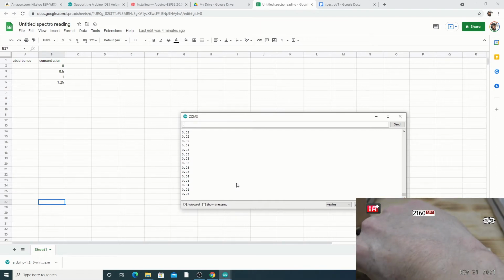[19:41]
That's just the math. Now, if you go and rotate this, what you want to do is rotate it 1/1000th of an inch in one direction, depending upon which wire's on which side. Since I had the ground wire on this side and the red wire on the other side, I can rotate it clockwise to bring it up in increments. What I want to do is rotate it 1/1000th of an inch, count to about 10, and see how it just turned to 0.03. I'm on the threshold right now. That's where I need to be. Now I need to back it down until it says 0.02. And that is my threshold of being on 0.
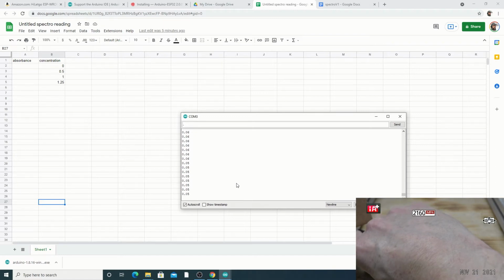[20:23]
Okay, so I'm going to change it again. I'm going to try to get back to 0.02. And I'm trying to be on the very threshold of 0.02 and 0.03. Do you need to be that accurate? Nope. Again, these are plottable points as it goes. I can dictate what 0 is because I'm never going to touch this dial ever again, unless I decide to go all black, or if I decide to go outside and use the unit where there's more infrared light. Once I make this change, I'm never going to use this dial again. So it's just on the cusp of going to 0.02, and it's only my OCD driving me right now. There we go. Okay, I'm going to leave it. So that is now zeroed out. Get rid of my distilled water. And that's how you zero out the unit.
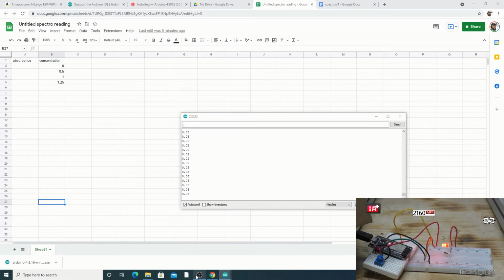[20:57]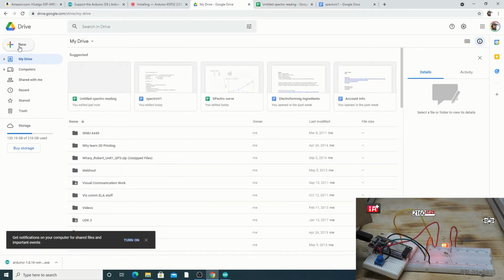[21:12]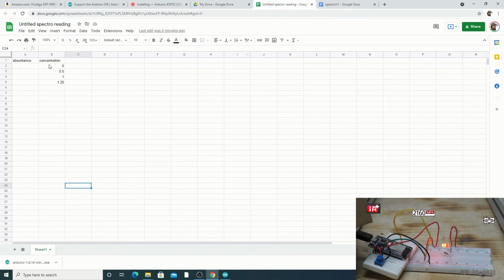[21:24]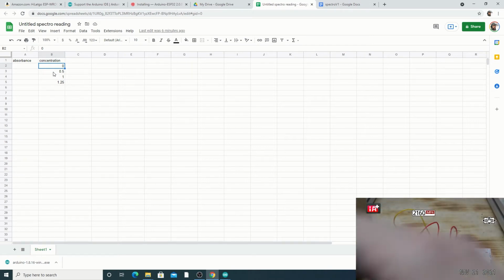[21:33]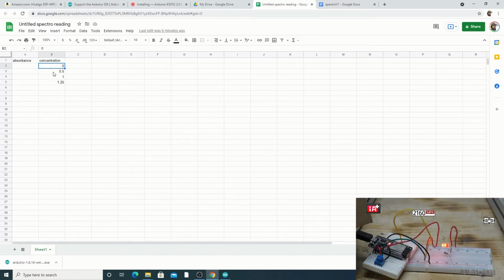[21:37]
All right, now we're going to look at how to make readings. To do that, I like to have an Excel sheet open, an Excel or Google Excel sheet. So if you go to drive.google.com and just click on New Sheet, blank spreadsheet. Here are the concentration levels that I have available. I have 0. I have an unknown, which we're going to look at. I have a 1.25. I have a 0.5. So I have 4 levels of measurement, believe it or not, because 0 counts as a measurement. So what would be the absorption ratio based upon this 0? Well, technically, I could say 0.02, if I wanted to be a completionist. Okay, that's our 0.
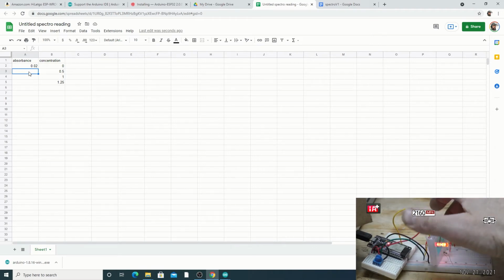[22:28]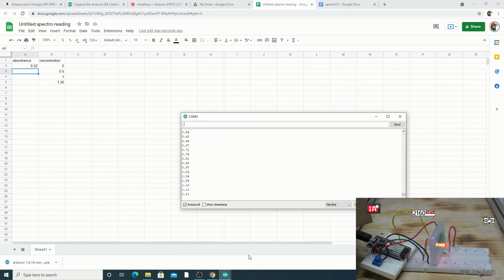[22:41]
So we go to the 0.5. I'm going to slide it in between here. Make sure it's all wiped off, and make sure that the 2 units are in parallel with each other. The light is touching the glass, the cell is touching the glass, and the light is going through at a good angle like that. All right, I'm going to go back over to our window, and we're going to just let that settle.
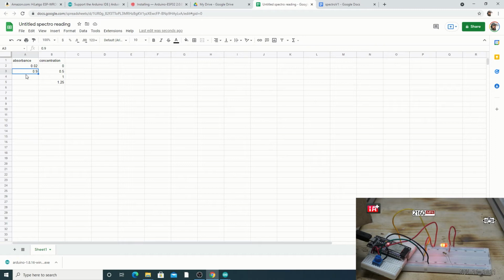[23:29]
And where's my 1? It's driving me crazy where all these samples are. Here it is. Imagine walking into somebody's house and there's just all these weird blue sample things laying around.
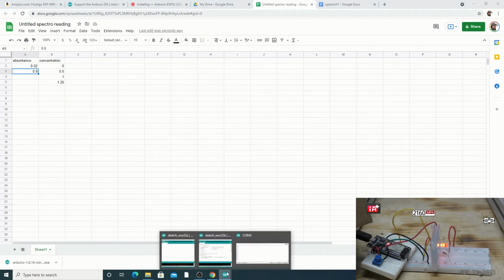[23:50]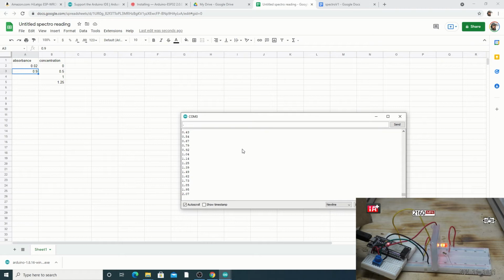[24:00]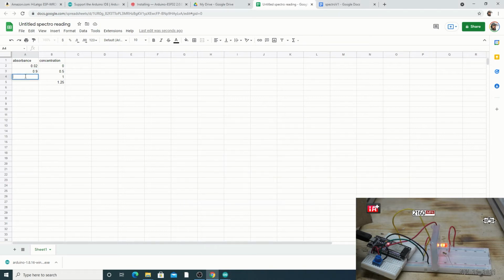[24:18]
All right, so just let it settle. Okay, it's going back up. So 2.34, I'm going to choose. Eventually, you're just going to have to pick a number. Okay, that was for the 1 molar. Okay, let's go to the 1.25.
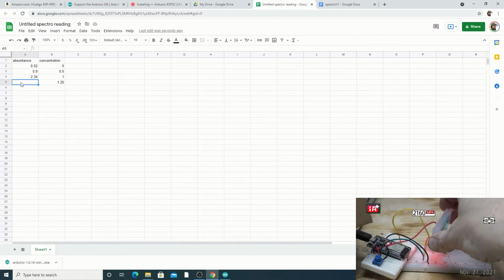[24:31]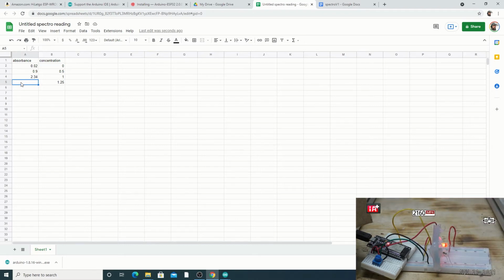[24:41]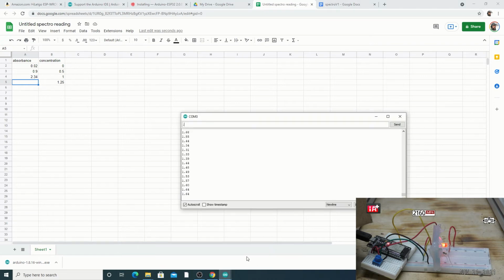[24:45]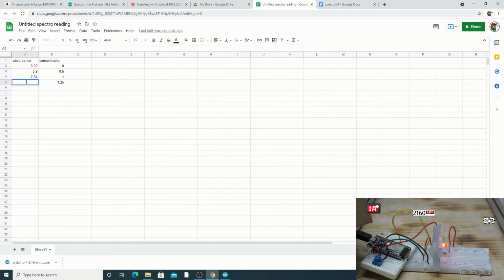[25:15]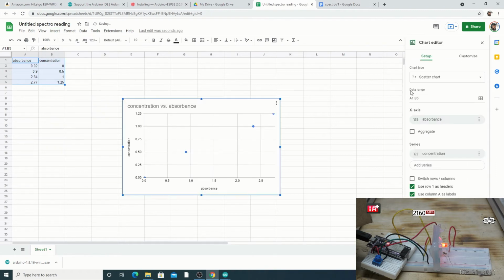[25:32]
Go. 2.77. Cool. All right, so let's take these. Boom, boom. We're going to make this into a chart that we can use. I want to have a line chart. Look at that beautiful curve. Oh, so good. Beer-Lambert would be so proud.
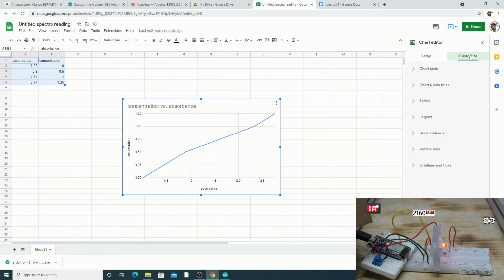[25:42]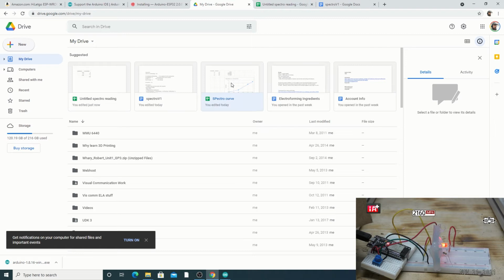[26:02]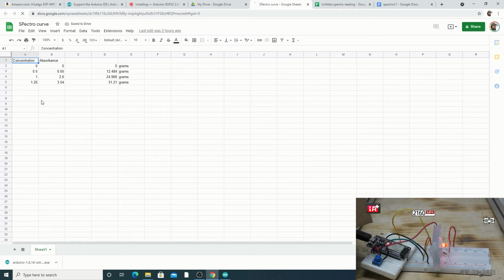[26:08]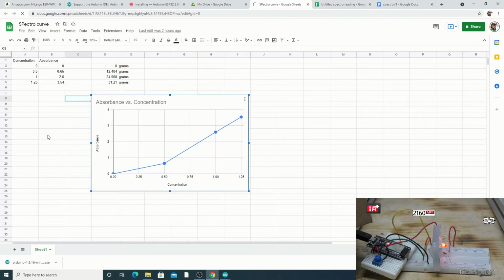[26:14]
So I'm going to go to Customize. I'm going to go to Series, and I'm going to choose this point size to be 10 points. So these are my sample points. And here's one I did earlier in complete darkness. You can see it's got the same curve. Okay? It's a linear curve. You can see that it changed my result a little bit.
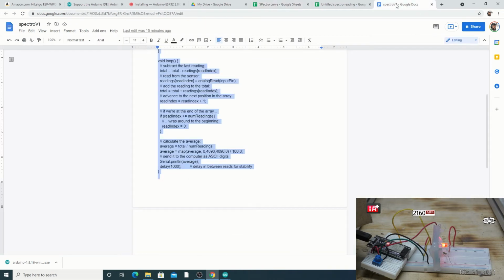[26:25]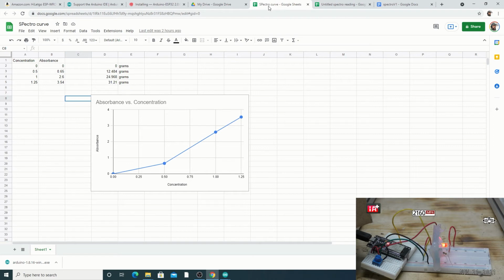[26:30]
So all I would have to do is pledge the rest of my life to always do testing in this one spot to get those results, to have it match that curve. If I did it in complete darkness, I can be anywhere in the world in any lighting because it would be in a box. That's the difference. Whether you want to do it in a box or in your lab in a very certain area, in a very certain lighting condition, doesn't really matter.
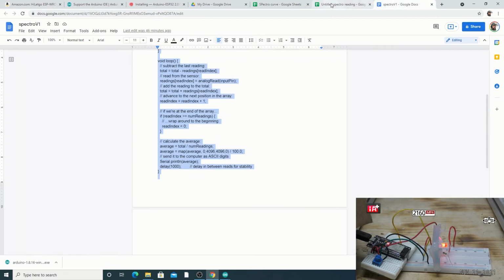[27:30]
Okay, so we have a random sample. Now we can use that random sample. We can take as many random samples as we want because we got this curve. It would be nice to have a little bit more points on our curve to make it a little bit more accurate, but it's always going to be linear, so it doesn't really matter. So the results are always going to be within this range that we're kind of lost in, okay?
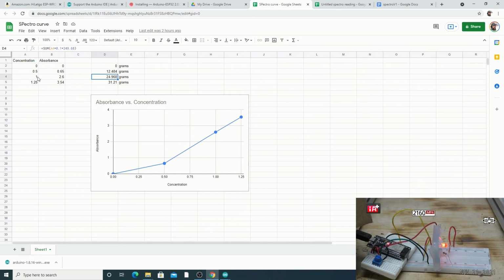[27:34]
And just to give you some introspect, I did put on this curve. So right here at 1 molar, I'm at 24.96. It's usually 22 grams that is the magic number that we want. 22 grams is the standard that I go by anyway for the concentration level. Okay? At 22, it acts nice. Anytime it gets up into 26 or 30, that's when it just falls to pieces. So let's look at our random sample. This one value right here is where it's good in this case.
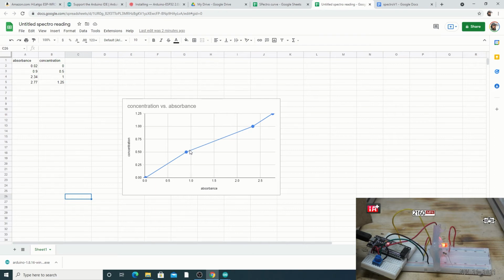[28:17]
And right here is where it starts falling apart. This is the good zone. Okay? Good zone. Anything outside the good zone? Pink fill. So random sample, this one is taken from a tank that is completely salmon. Need to decide what I want to do with it. So let's find out based upon our ESP32 what I need to do.
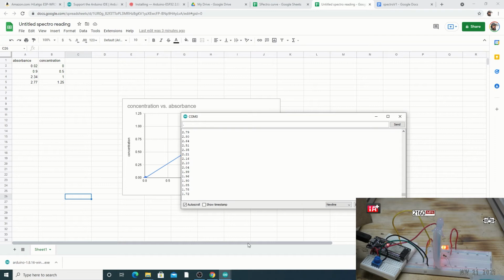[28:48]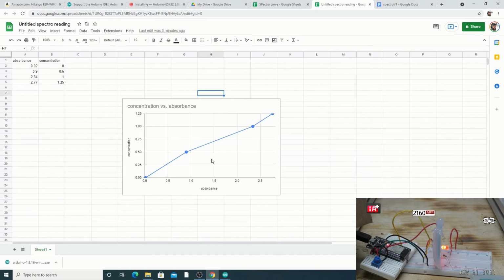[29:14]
And it settled for about 1.60. Okay, 1.60. And that would be right here. And right here is where we want to be. Isn't that cool? Now I know. Okay, it has too much copper in it by a little much, but not bad, right? It's right on the cusp, right in this area is where it's good. Right here is where it's at on the curve, around this area.
And I can use this curve to make decisions now. I can say, well, I could empty a little bit and add water to it. Okay, that's one way to do it. I could stick a graphite anode and a graphite cathode in and apply a small voltage to it, and I can suck some of the copper out that way to reduce the level of copper. But either add water or use a graphite anode and a graphite cathode. I now have a choice.
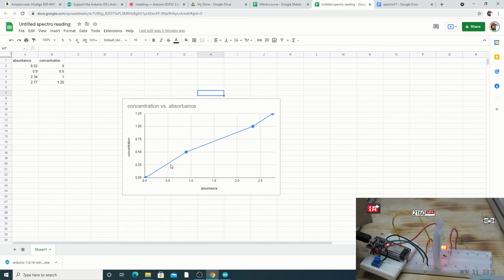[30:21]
So when does it get pink the other way? I would say right about here. About 0.75 is when it starts going pink the other way. In fact, it's a different type of bad. It's like this ball bearing type of deal where it has these super weird balls that grow on all the thin parts of the copper. So it's not pink. It's a different type of bad.
I don't have a sample to show you. I don't ever go this way very often as far as the reduction. But trust me when I say, right around in this area, you're going to have some problems too. And then how do you fix that? Well, you let your tank dehydrate. That's it. You let your tank dehydrate, and then your concentration level goes up because your water's out of it, and then you go back to normal. And you can decide, well, do I want to take a sample of that and see where I'm at, and then run the bath.
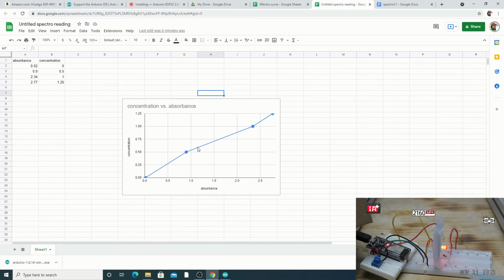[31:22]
Another thing you could do is, let's say you had the awesome bath, the bath that's running at ideal conditions. Before you celebrate, you can take a sample of that really good bath and apply it to your curve, and it shows where you're at. All right, so that's how the curve works.
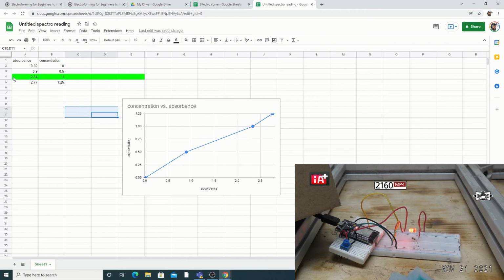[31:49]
So I kind of just labeled this area as good. You're missing a little in-between area right here that is going to be at the 22 gram level. So here's how you add some of this in, just in case you're interested. All you need to know is the molecular weight of copper sulfate pentahydrate, and you need to know your concentration. So you can do this for all your concentrations.
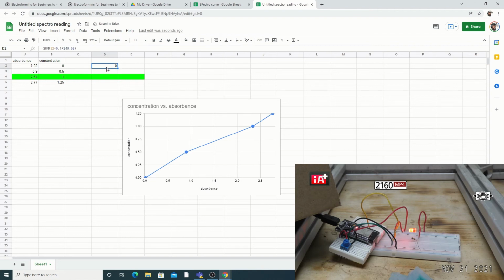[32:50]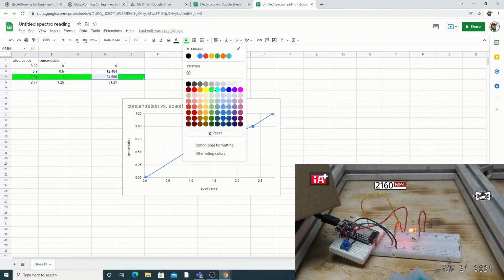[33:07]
You do this in the Google Sheet. You can just go sum, and then you go to this field, concentration. Then you go star, so asterisk, 0.1, then asterisk, and then the molecular weight, which is 249.68. And this one's 0, but you can copy this using Control C and paste it. There we go. I just labeled this green by highlighting this area. And that's a safe place to be. Again, between 22 and 24 is a safe place to be.
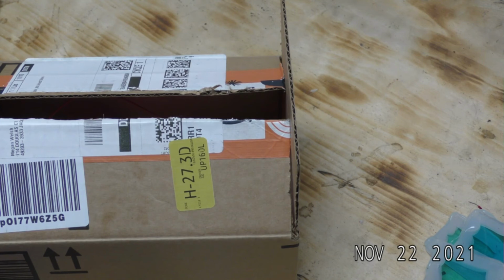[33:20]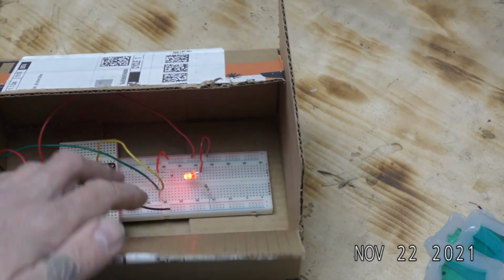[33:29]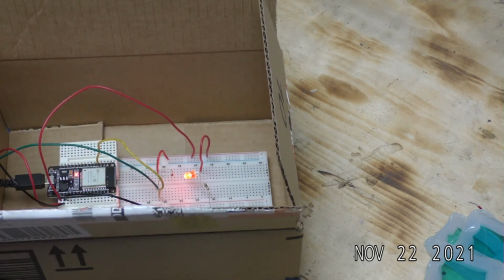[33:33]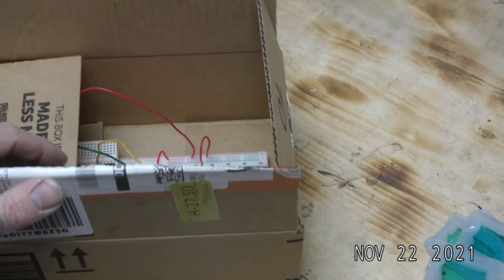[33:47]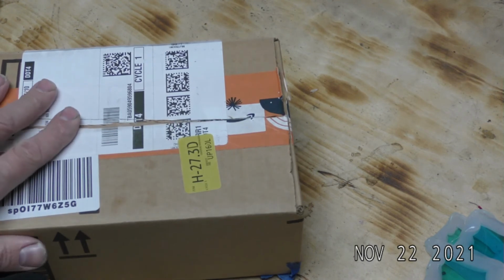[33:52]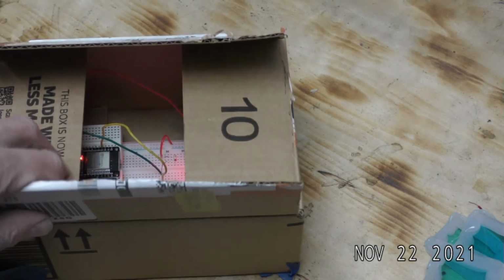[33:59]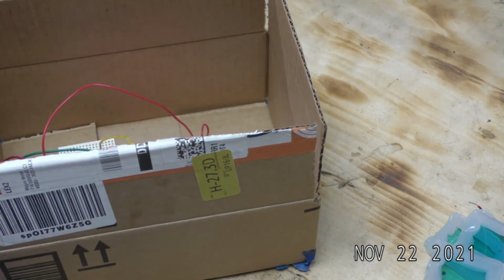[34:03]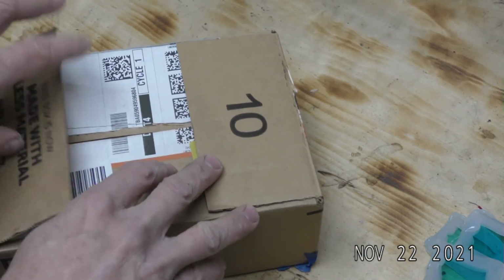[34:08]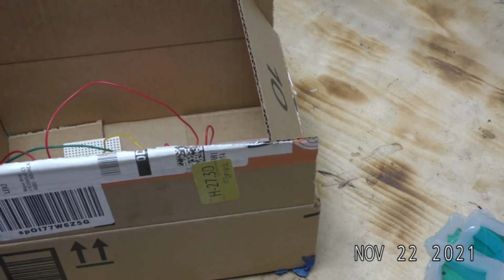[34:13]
All right, so I decided to cover the box variation of this because I know I'll have questions about that, and why not just cover it, right? So, for example, if you want to take a reading in the middle of the afternoon, it's bright outside, the sun is shining in the window, the inside of this box is black, dark. If it's 12 a.m. and it's dark out, but you have some kind of rave light going on, you shut this, it's dark. Not to mansplain it to death, but it's always a known variable that it is dark in the box, so no other light is going to interfere with it, no matter what wavelength. So that's why I'm going to cover the box variation.
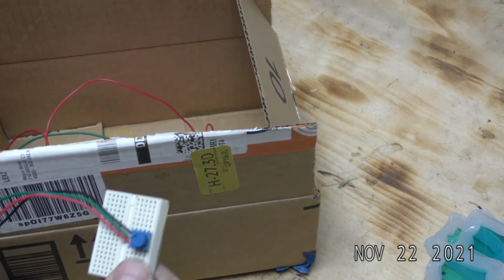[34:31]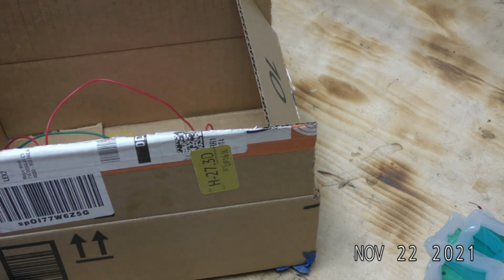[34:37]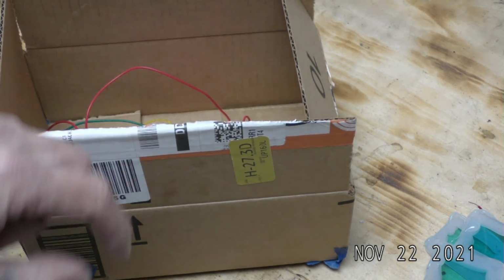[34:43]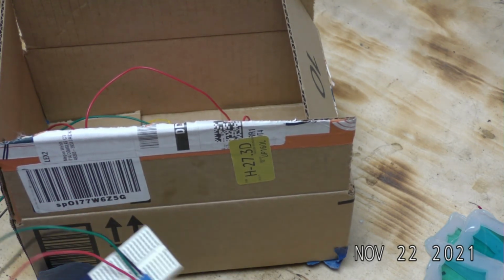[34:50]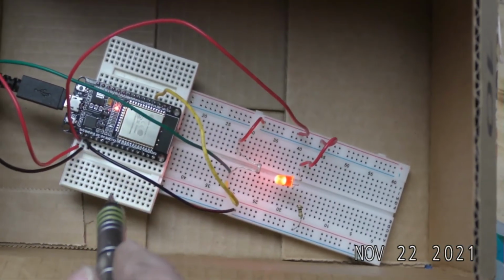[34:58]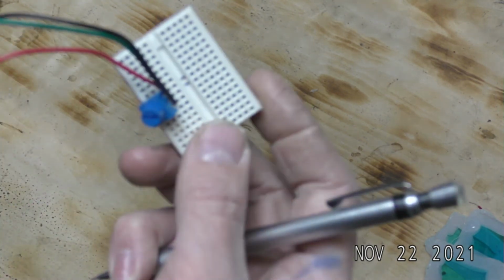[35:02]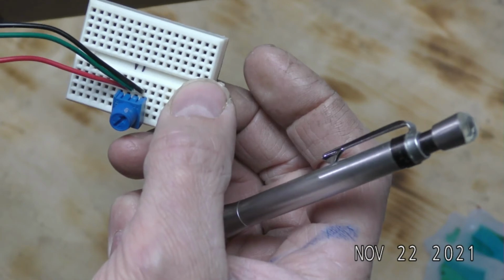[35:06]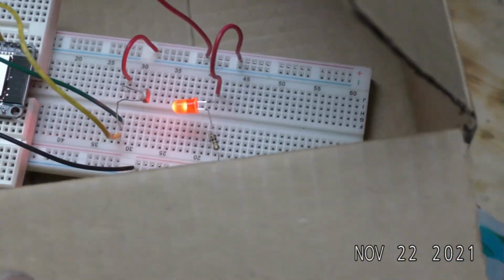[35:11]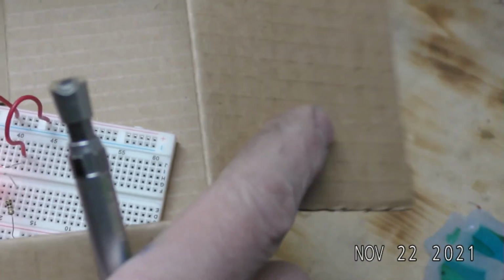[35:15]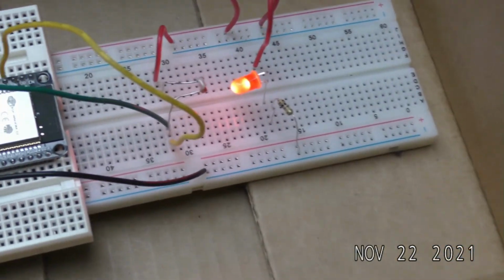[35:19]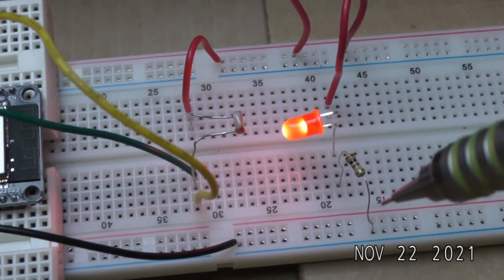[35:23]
The only difference in the box variation is the potentiometer is mounted on the outside of the box. Because when you zero it out, you want to zero it out when the box is closed, and you wouldn't be able to hold the potentiometer if it's inside. You get the idea. So you want to make the adjustments. You need to run 3 wires to it, meaning you would have to have a 1, 2, and a 3 micro breadboard. Or you can have a regular breadboard outside too, but you need a lot of breadboards to do it. So I'm going to run you through all the wires, what changed, and even if they haven't changed, I'm going to run it through anyway.
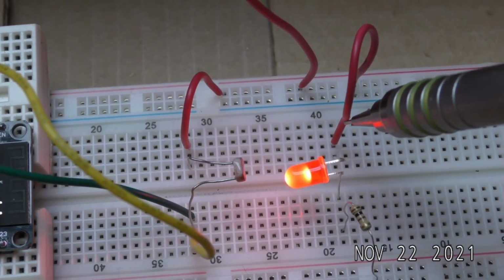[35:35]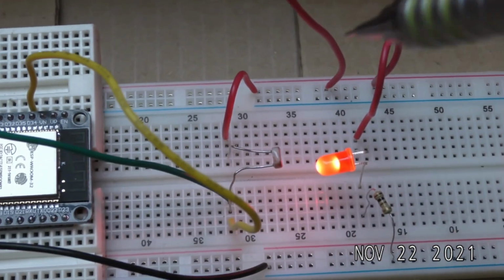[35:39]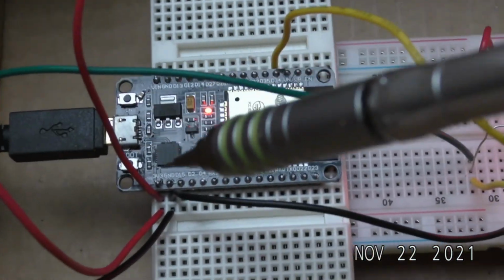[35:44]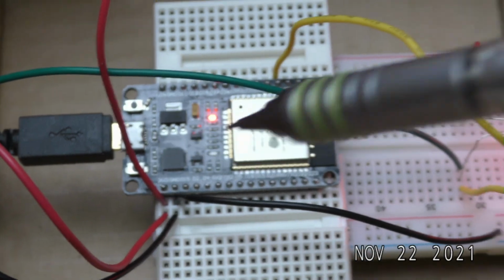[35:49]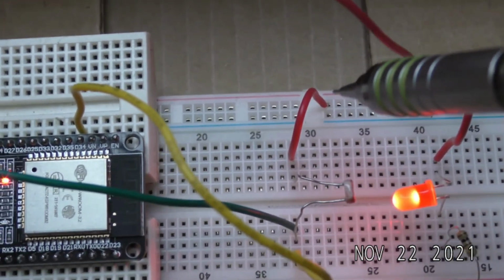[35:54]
So I have my ground going to the ground of the LED. So that's the short lead of the LED. I have the positive running to the positive rail. Okay, so that hasn't changed. This is running to the 3-volt channel on the microcontroller, and that powers that entire rail. I have the power, 3 volts, running to one side of the photocell. Doesn't matter what side it goes to.
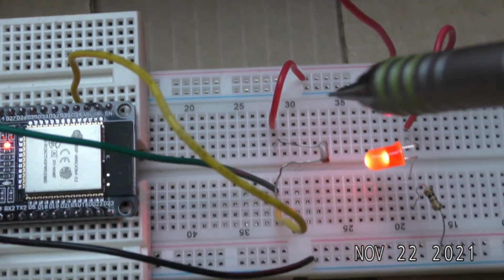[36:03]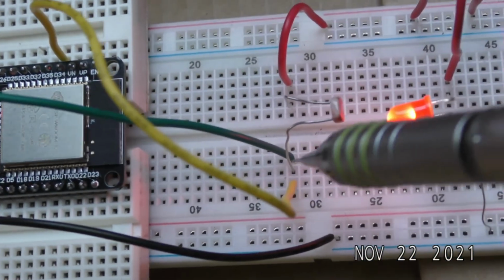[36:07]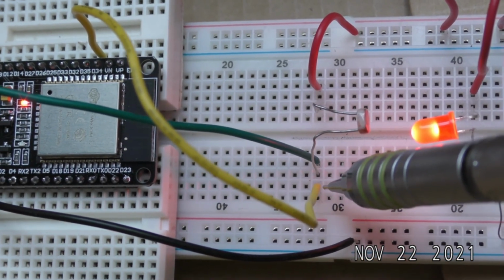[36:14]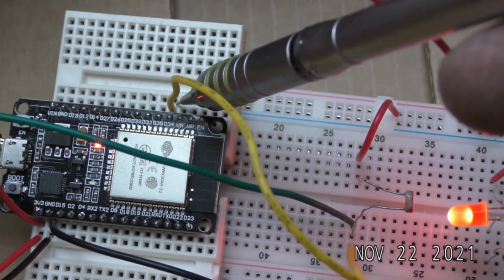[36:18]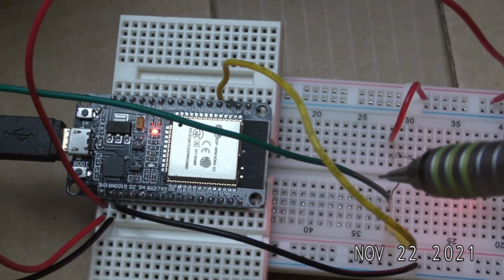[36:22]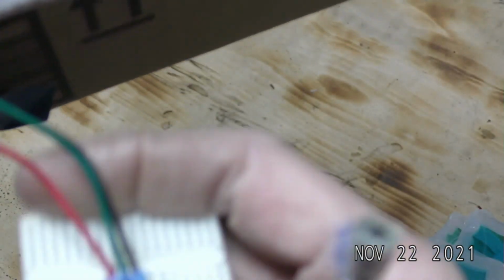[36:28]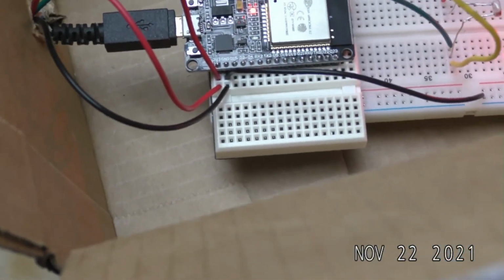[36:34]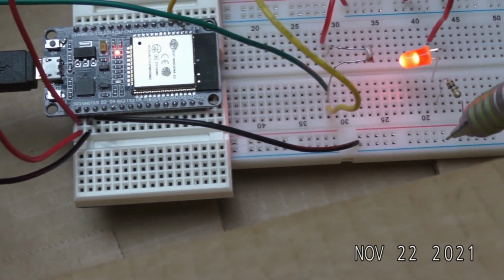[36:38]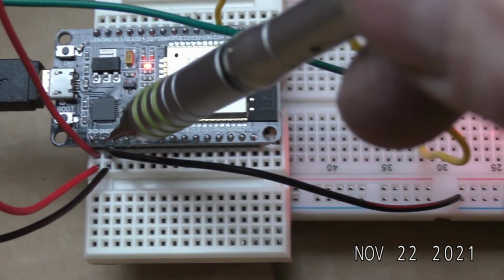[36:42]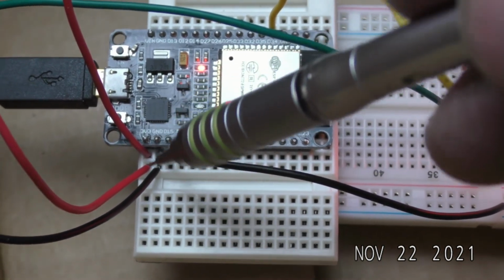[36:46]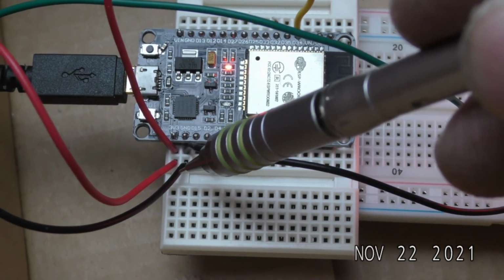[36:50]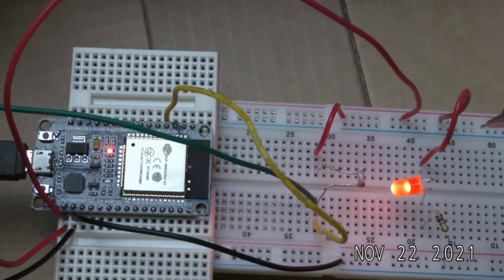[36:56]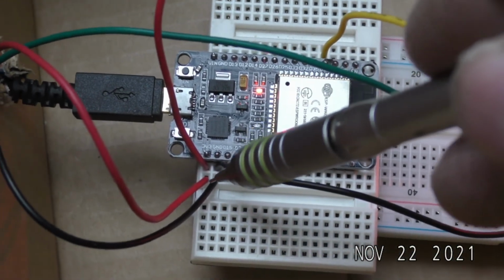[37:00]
Okay, I have my data cable. So I have 3 in here. I have the green, the photocell, and my data cable. The data cable goes into D34. Boom. The green actually goes to the center of my potentiometer. Cool. And then I got this ground that powers this entire ground rail hooked up to the ground here. The other ground is going to my potentiometer. Again, just to cover this again, we got 3 volts running to this rail. Boom. And I have the other 3 volts going to my potentiometer.
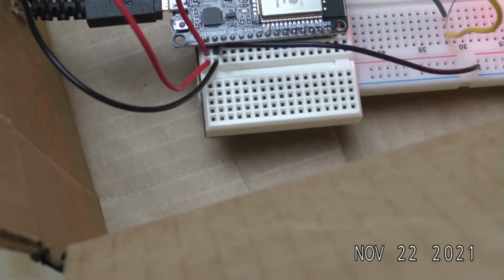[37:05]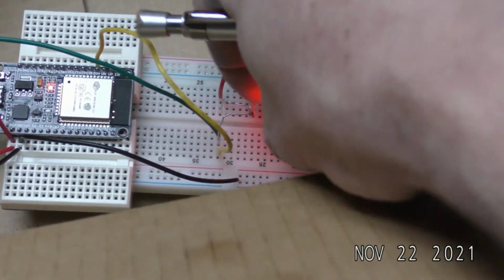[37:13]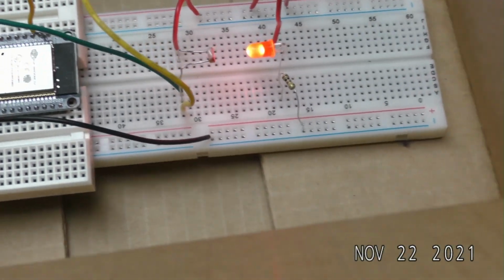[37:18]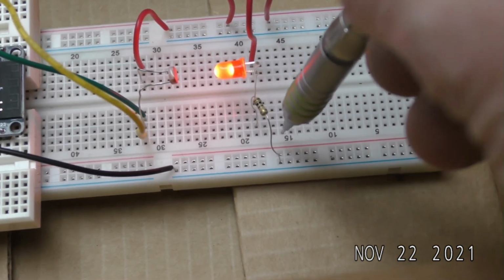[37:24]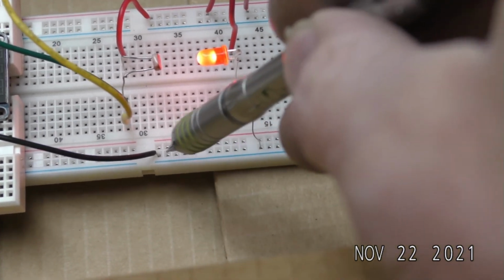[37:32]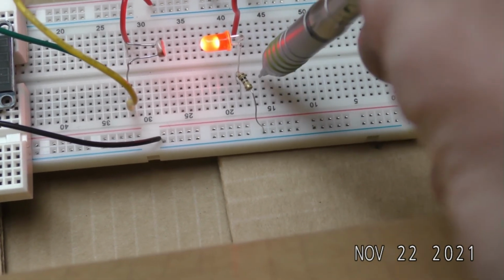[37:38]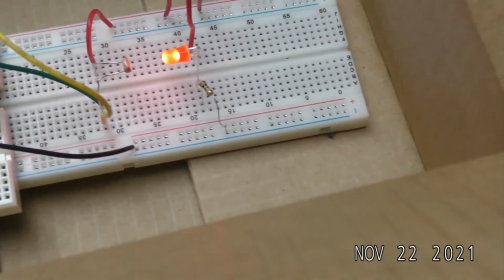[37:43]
I've been a victim of too many breadboard tutorials when I was younger to know that you have to cover every angle on these things, because you never see. Some people try to match up the numbers. I used to do that when I was a kid. I'd be like, well, he has it plugged into N22, and that means it's going to work. But that's not the case. Just know that all these are connected, all these are connected, and then every row is connected like this. And you're going to be set. You can move it all around anywhere you want to go.
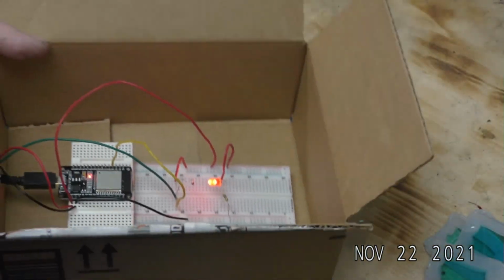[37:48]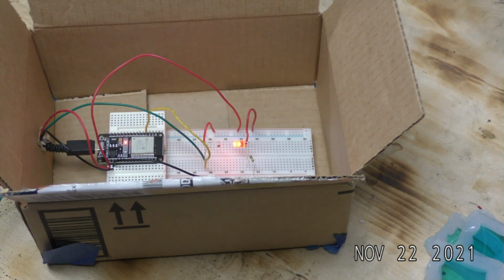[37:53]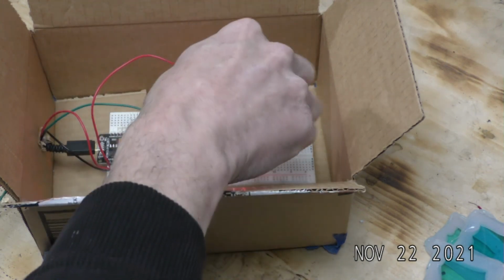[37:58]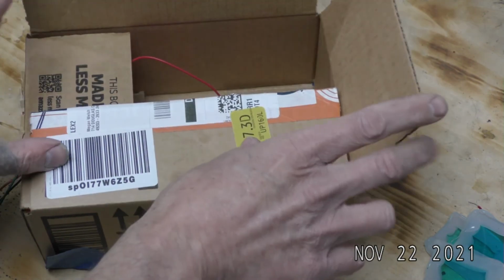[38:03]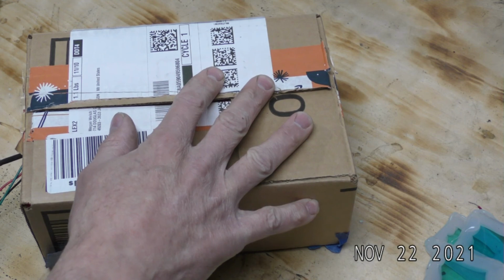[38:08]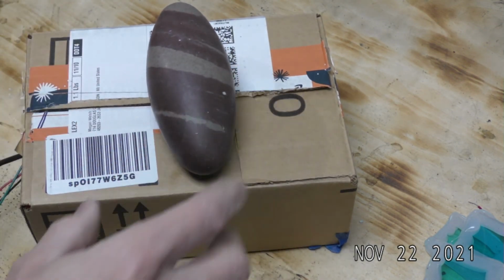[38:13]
All right, so now that I have all that, I can zero out the device and just repeat the same process. I would put in my distilled water like that. I would close the lid like that. I don't have anything, so I'll put the Shiva stone on top of it because it's just laying around. Why not? Don't even look it up. It's well grounded now.
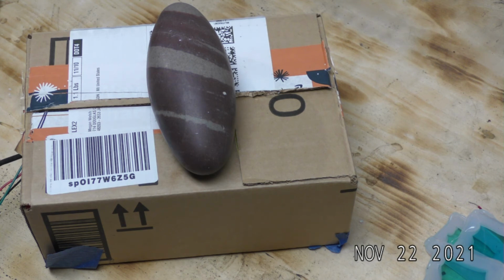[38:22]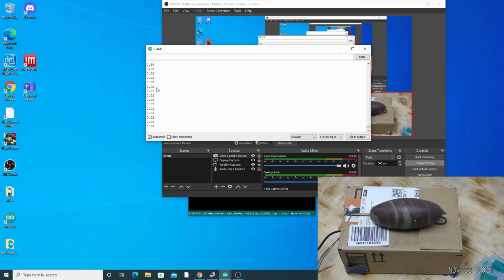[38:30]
All right, so now we'll look at zeroing it out. What's the difference? Here I have my readings coming in. Right now it's actually 0 on the COM port, but I want to make sure that it's on the very threshold of 0. So what I'm going to do is rotate this slightly, then patiently wait for 0.3 to show up.
Super patiently waiting. Okay, not showing up. Making a microscopic adjustment here. Waiting for 0.3. No signs of life. Okay. Rotating again. Just fight the urge of making a huge change.
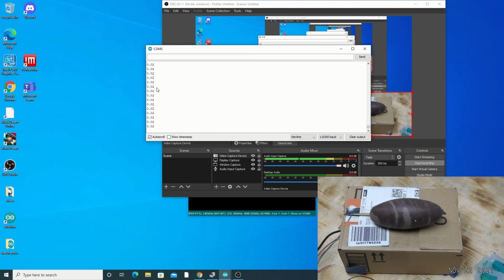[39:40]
But by the way, this potentiometer is a 10K. I looked it up, if you are at all interested. Here it is in the video, where my hand is showing that I'm rotating it. I don't know if that's important. Rotating it again. There we go. Beautiful. So I just got life, 0.4.
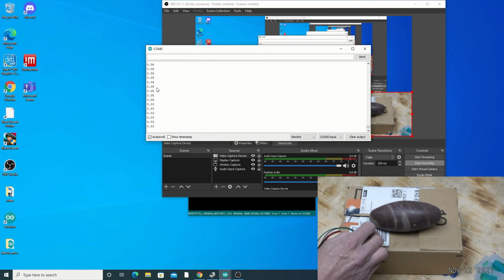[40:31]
So I'm going to back it down very slowly so I can get back to the 0.2, but that's going to be on the threshold of where I need to be. This is where an auto-tuning algorithm comes into play. All right, there we go. 0.2. It's just on the verge. All right, sweet. So I'm going to leave it right there. I'll never have to make that adjustment again.
And now I can run through the exact same test I did before, knowing that that curve will be the curve I use forever and always, and I don't have to do all the testing again. So that's why I wanted to do the box variation with you, because it'll be a super stable curve for you, so you don't have to do the retesting every time, even though it is fun.
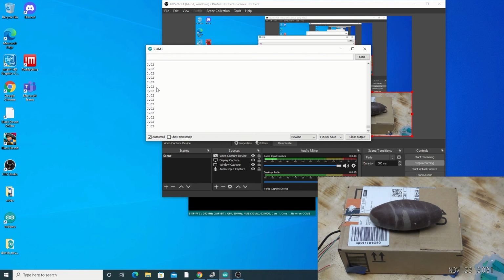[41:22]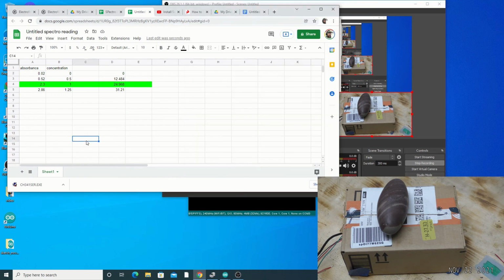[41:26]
All right, so after running the tests, I got these results right here. As predicted, there were minute changes. The only change was probably at the 0.5 concentration, a significant change there. But other than that, there was no significant change. So I'll plot this curve for you.
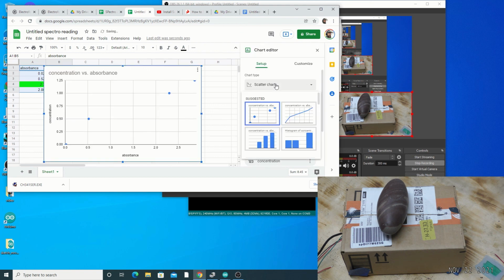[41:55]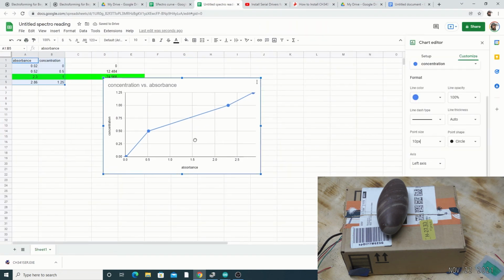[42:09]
Series. Here's my point size. It's bigger. We'll move it out of the way. All right, so there it is. You can definitely see the difference right here. This was way down there before. But same linear curve, showing me that the test is actually working.
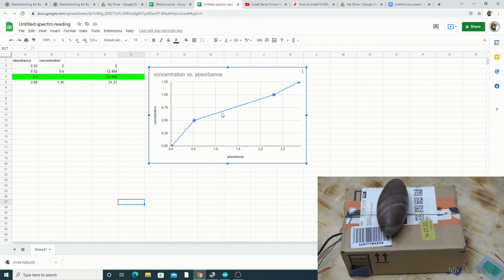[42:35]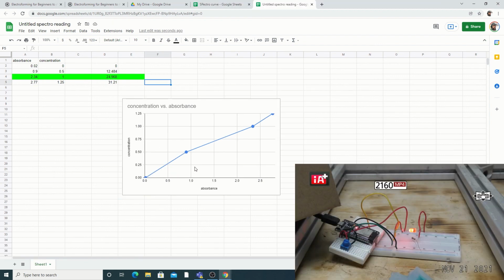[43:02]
There was no significant change when it came down to the absolute darkness versus the absolute light, only because I'm in an area right now that has fluorescent lighting. There is no infrared type of light anywhere in the room that I know of, and that's probably why. So, good times. All right, that was fun. Now we're going to look at some other material.